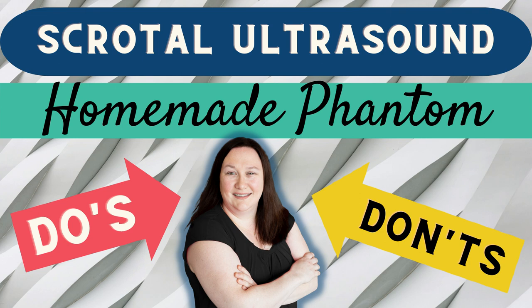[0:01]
Let's ultrasound! On today's edition of Small Parts Ultrasound, let's explore a scrotal ultrasound homemade phantom. Do's and don'ts.
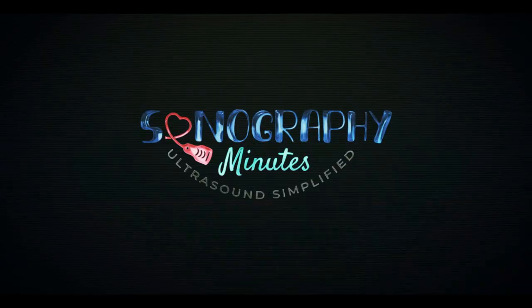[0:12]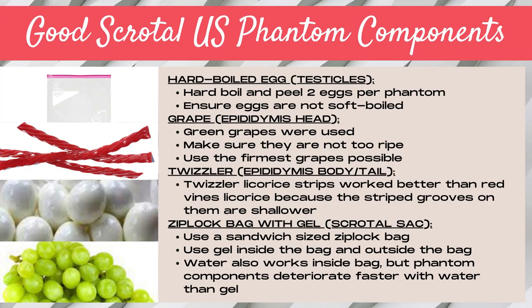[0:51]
So how did the homemade scrotal ultrasound phantom come about? We needed to find a way to simulate a scrotal ultrasound exam in the ultrasound scan lab with a group of general ultrasound students and determine which parts would work well for a homemade scrotal phantom ultrasound. We wanted to teach the scrotal ultrasound protocol tips and measurements and also be able to develop eye and hand coordination that comes with having to scan highly mobile structures such as eggs, to help simulate a real scrotal ultrasound exam. So first, let's talk about the components that worked well for a scrotal ultrasound homemade phantom.
First of all, we used hard-boiled eggs for the testicles. We hard-boiled the eggs and peeled them and used 2 eggs per phantom. And the key to this was just ensuring that the eggs were not soft-boiled because they needed to be firm to withstand firm transducer pressure.
Next, we used grapes as the epididymal heads. And we used green grapes, although you could use any color of grapes. And you wanted to make sure that they're not too ripe. You want to pick the firm grapes that are not quite as ripe. And this is also so that they hold up longer with the ultrasound gel and also firm transducer compression. We also used Twizzlers, licorice, in order to simulate the epididymis body and tail. And the grapes were used to simulate the epididymis head.
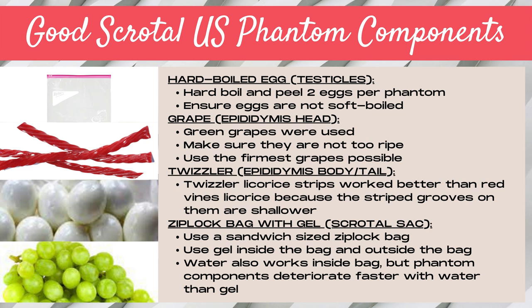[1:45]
And we found that the Twizzlers licorice strips work better than red vines because the grooves on the outside of the Twizzlers were smaller and therefore easier to image. And we also used a Ziploc bag with gel in it. And this was to simulate the scrotal sac. So we used sandwich size Ziploc bags. And we put quite a bit of gel within the bag, as well as putting gel on the outside of the Ziploc bag. Now note that you can also use water. You can put a small amount of water within the Ziploc bag. However, the ultrasound phantom components deteriorated much faster when using water.
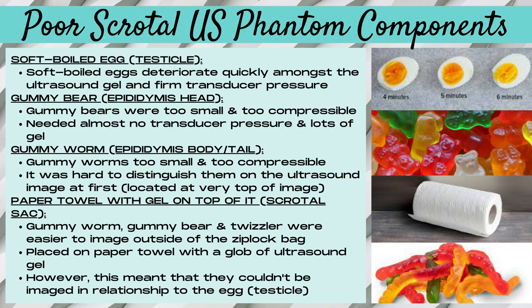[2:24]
Now let's talk about what made poor scrotal ultrasound phantom components. So first of all, when performing this lab, the most essential step is ensuring that your eggs are fully hard boiled. We had a couple of eggs from the bottom of the pan that ended up being only soft boiled. And those quickly deteriorated and did not make a good scrotal phantom ultrasound component. And they pretty much disintegrated as soon as firm transducer pressure was applied.
We also tried to use gummy bears to simulate the epididymis head. And the gummy bears were really too small and too compressible. In order to image them, we needed almost zero transducer pressure and a ton of gel. And it was exceedingly hard to see the gummy bear on the ultrasound image. And due to the challenge of visualizing this structure, there was no way to get it in the same image as the hard-boiled egg or the testicle.
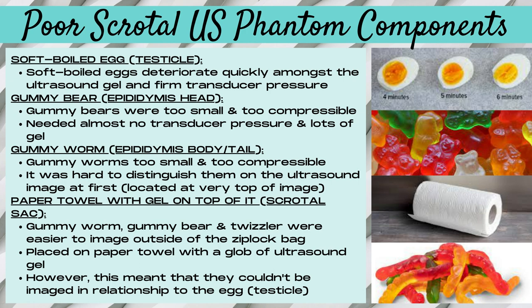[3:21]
And we also tried to use gummy worms for the epididymis body and tail. And similar to gummy bears, these were too small and too compressible. And it was incredibly hard to distinguish them on the ultrasound image. They were located at the very top of the image, but it took a lot of trial and error to determine that. And then we also tried using just a paper towel with gel on the top of it for the scrotal sac instead of a Ziploc bag.
And this did work better when imaging the gummy bears and the gummy worms and also the Twizzler. And so we placed those on a paper towel, laid them flat, and then put gel on top of them and were able to image them easier than we could image them within the Ziploc bag. However, this did mean that they couldn't be imaged in relationship to the egg or the testicle, which is what you would want to do in real life. You want to see the epididymis in relation to the testicle for comparison purposes.
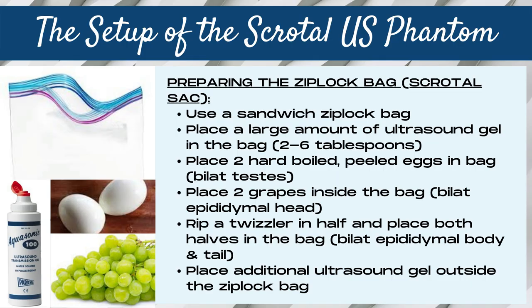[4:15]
To prepare the scrotal ultrasound phantom, we used a sandwich Ziploc bag and we placed a large amount of ultrasound gel within the bag. And this was most commonly between 2 and 6 tablespoons of gel. And then we placed 2 hard-boiled peeled eggs in the bag to simulate the bilateral testicles. And then placed 2 grapes inside the bag to simulate the bilateral epididymal heads. And then we broke a Twizzler licorice stick in half.
half and placed both halves in the bag to simulate the bilateral epididymal body and tail. And then we placed additional ultrasound gel outside the Ziploc bag. And this worked fairly well. However, the components started to break down rather quickly.
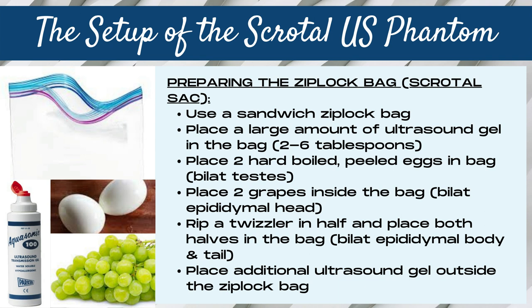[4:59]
So rather than putting everything in the bag at the same time at the start of the lab, I suggest only put the right-sided structures in first and then do all your images and then put your left-sided structures in second, meaning the grape and the Twizzler. Both testicles or eggs should go into the bag right away. But the grapes and the Twizzlers broke down fairly quickly. So if you can hold off on the left epididymal head and the left epididymal body and tail and put those in the bag right when you're needing to image them, they won't have deteriorated while you're scanning the right-sided
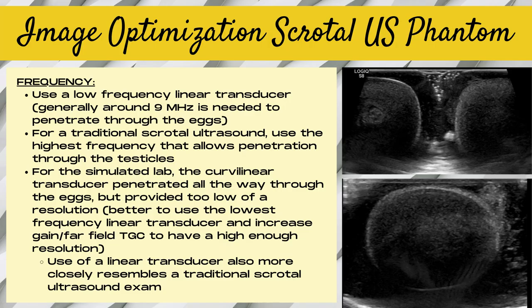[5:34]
structures. Let's talk a little bit about image optimization for this scrotal ultrasound phantom. First of all, the hard-boiled eggs were very dense, and so we needed to use the lowest frequency linear transducer, and we are generally around the 9 megahertz range in order to try to penetrate through the eggs. And we truly actually needed to go lower than that, but our linear transducers didn't have capability to go lower without switching to a curvilinear transducer. And when we did switch to a curvilinear transducer, the resolution was much too low. So had we been able to, we really needed to probably be around 5 to 7 megahertz frequency level for the ideal frequency level for the scrotal phantom.
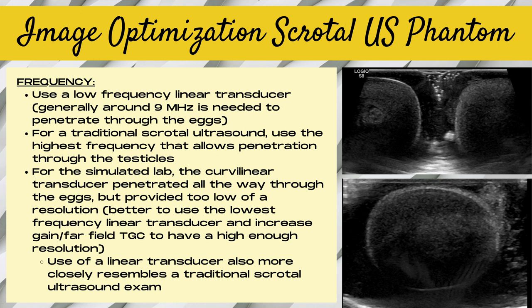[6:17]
When you're imaging a traditional scrotal ultrasound, you always want to use the highest frequency that allows you to penetrate down through the testicles. And so you may be able to use a much higher frequency than the scrotal ultrasound phantom allowed. We also stuck with a linear transducer for this scrotal ultrasound phantom exercise to more closely resemble a traditional scrotal ultrasound exam, in which linear transducers are used most of the time to perform the exam.
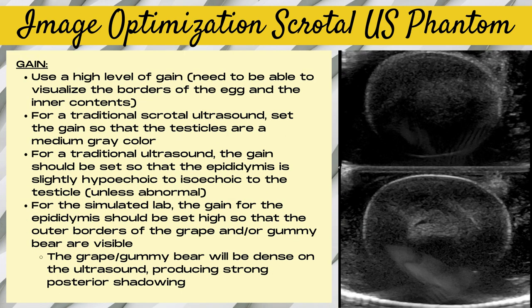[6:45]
Next, let's talk about gain. We had to use a really high level of gain due to the lack of penetration. And so we had to really crank the gain up in order to be able to visualize the borders of the egg all the way around. Now for a traditional scrotal ultrasound, you want to set the gain so that the testicles are a medium gray color. And the gain should be set so that the epididymis is slightly hypoechoic to isoechoic compared to the testicles, as long as they're normal.
For this simulated lab, the gain has got to be set up high enough so that you can clearly see the outer borders of the scrotal ultrasound components, whether that be the grape, the gummy bear, the egg, the Twizzler, or the gummy worm. And note that many of these components, such as the grape and the gummy bear, are going to be very dense structures, and they're going to produce strong posterior shadowing.
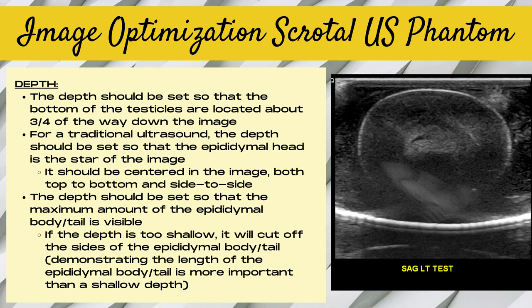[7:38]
Time to talk about depth. The depth should be set so that the bottom of the testicles or the eggs are located about 3/4 of the way down the image. And for a traditional ultrasound when imaging the epididymis, the depth should be set so that the epididymal head is the star of the image and is centered in the image, both top to bottom and also side to side.
For the simulated lab, the depth should be set so that the maximum amount of the epididymal body tail is visible. And note that if the depth is too shallow, it's going to cut off the sides of the epididymis body and tail. And demonstrating the length of the epididymal body tail is more important than a shallower depth and having the epididymal body and tail more zoomed up on the image.
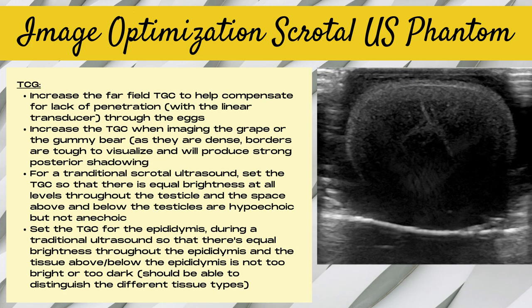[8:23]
Due to the lack of our ability to penetrate through the dense eggs for this lab, we really needed to increase the far-field TGC to help compensate. And we also needed to increase the TGC when imaging the grape or the gummy bear, as they were very dense structures. And the borders are very tough to visualize and they have strong posterior acoustic shadowing.
For a traditional scrotal ultrasound, you want to set the TGC so that there's equal brightness at all levels throughout the testicle, and that the space above and below the testicles are hypoechoic but not anechoic on the image. And then for the epididymis, you want to set the TGC so that there's equal brightness throughout that epididymis, and that the tissue above and below the epididymis is not too bright or too dark. You should be able to distinguish the different tissue types above and below the epididymis and also the testicles.
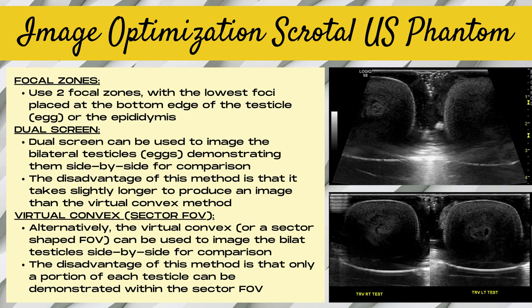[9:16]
When imaging the scrotal phantom, as with a traditional scrotal ultrasound, you generally want to use 2 focal zones with the lowest foci placed at the bottom edge of the testicle or the epididymis. And then you can either use dual screen to image the bilateral testicles side by side for comparison. A disadvantage to this method is that it takes just slightly longer to produce an image than the virtual convex method. Or you can also use virtual convex to display the testicles side by side for a comparison image.
And virtual convex is a sector-shaped field of view. Even though you're using a linear transducer with a rectangular field of view, there's a control on the ultrasound machine, called virtual convex, specifically on GE machines, that allows you to change the image shape to a sector shape and get more of the testicles within the image. Now, a disadvantage of using virtual convex is that only a portion of each testicle can be demonstrated within the sector field of view image, while when using dual screen, you can show both entire testicles.
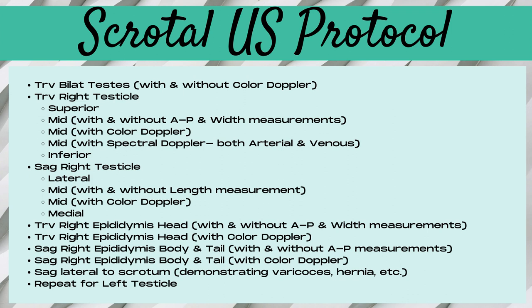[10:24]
Time to talk about a typical scrotal ultrasound protocol. So you first want to take a comparison image, a transverse of the bilateral testicles with and without color Doppler. And you're looking to see, are the testicles the same size? Are they the same echogenicity? And do they have the same amount of blood flow bilaterally?
And then you want to move to a transverse right testicle and you want to image this superior, mid, and inferior. And for the mid portion, you want to take width and AP measurements. And then for the mid image, you also want to perform color and spectral Doppler images. And it's crucial that when you're doing the spectral Doppler images that you are not only interrogating the arteries, but also a vein. And then you want to move on to a sagittal right testicle. And you want to image this laterally, a mid shot, and also medially. And for the middle portion, you want to take a length measurement and also a color Doppler image.
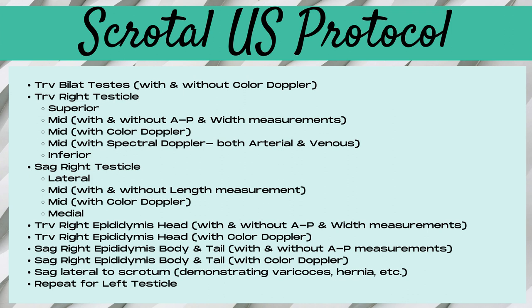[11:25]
And then it's time to move on to the epididymis. And you want to start with a transverse right epididymal head with and without width measurements and also with color Doppler. And it's crucial to compare the color Doppler signal of the epididymis with the testicle. So make your color box wide for this image so that you can compare the color flow signal between those two structures. And next, you want to turn into a long or sagittal plane to demonstrate the epididymal body and tail.
And you want to take AP measurements of the epididymis body and also the epididymis tail. So that's going to be four measurements altogether for the epididymis. And then you also want to demonstrate the color Doppler of the epididymis body and tail and compare that with the blood flow pattern within the testicle. Next, move on to a sagittal lateral picture. And this is going to be the space that's lateral to the scrotum. And this is where you would demonstrate if there's any hernias, varicoceles, etc. And then you want to repeat all of that for the left testicle.
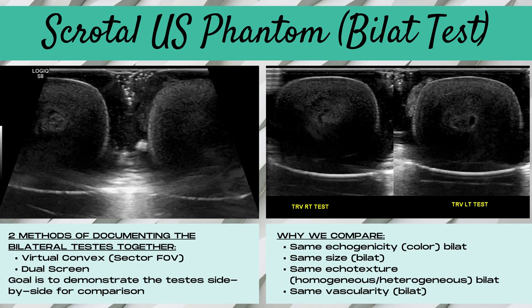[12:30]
Here are some images of our scrotal ultrasound phantom demonstrating the bilateral testicles, and these are our hard-boiled eggs. The image on the left shows the virtual convex. This is a sector field of view method of demonstrating the bilateral testicles. And the goal is that you want to demonstrate the testes side by side for comparison. And you can see with this technique, only a portion of each testicle is visible. On the right side of the screen, we use the dual screen control to demonstrate the bilateral testes. And for this, you can notice that both testes are visible in their entirety.
Now, why do we compare? We compare to determine if the testicles are the same echogenicity bilaterally. Are they the same size bilaterally? Do they have the same echo texture? Meaning, are they homogeneous or heterogeneous in echo texture? And then also, do they have the same amount of vascularity bilaterally?
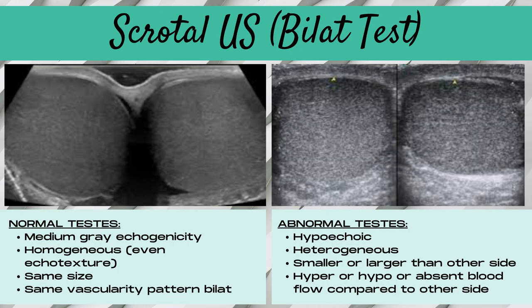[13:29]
Now here's what a normal scrotal ultrasound would look like. The image on the top left demonstrates the virtual convex method of demonstrating both testicles side by side within that sector-shaped field of view. And the upper right-hand image demonstrates the bilateral testicular comparison using the dual screen control. Normal testicles on ultrasound are going to be a medium gray echogenicity, and they're going to have a homogeneous, even echo texture. They should be relatively the same size and should have the same vascularity pattern bilaterally. Abnormal testicles are going to be hypoechoic, heterogeneous, smaller or larger than the other side, with hyper or hypo or avascular blood flow compared to the other testicle.
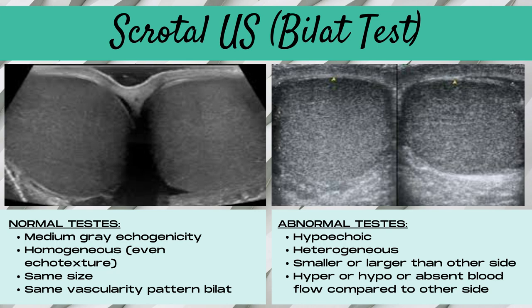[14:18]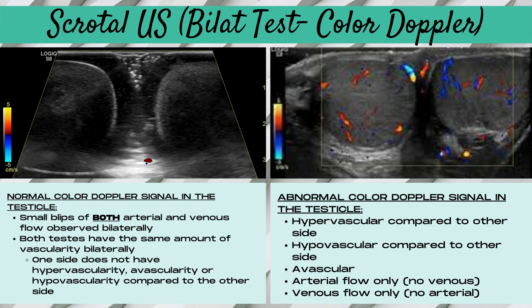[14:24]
And they may also have free fluid around them and or display signs of skin thickening. Now let's talk about color Doppler and imaging the bilateral testicles. It's crucial to take a color Doppler image of both testicles side by side so that you can compare the vascularity pattern from one testicle to the other.
The upper left-hand image is a simulated color Doppler image using the scrotal phantoms. And we had our students practice this so that they could get in the habit of always evaluating the bilateral testicles with color Doppler, even though eggs, when used as testicles, are obviously not going to have a color Doppler signal pattern within them. So what is a normal color Doppler signal in the testicle?
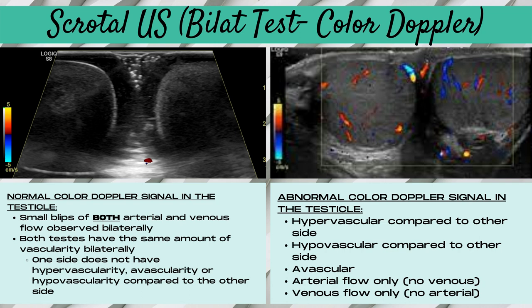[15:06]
You want to see small blips of color Doppler signal that demonstrates both arterial and venous flow bilaterally in the testicles. And you want both testicles to have the same amount of vascularity bilaterally. And you want to make sure that one side is not hypervascular, avascular, or hypovascular compared to the other side.
An abnormal color Doppler signal in the testicle is going to be hypervascular compared to the other side. It could also be hypovascular compared to the other side. It could be avascular compared to the other side. Or it may demonstrate arterial flow only with no venous signal, or venous flow only with no arterial signal.
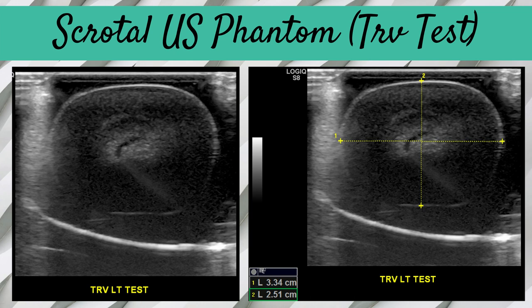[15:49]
Next up, we're moving on to the transverse testicle. And these images both demonstrate the scrotal ultrasound phantom. So these are our hard-boiled eggs. And what I really liked about this scan lab that I think is really important for demonstrating real-world conditions is that the bilateral eggs were highly mobile within that gel-filled Ziploc bag. And so you really have to get the hang of using firm transducer pressure to get that egg to sit still enough that you can image it.
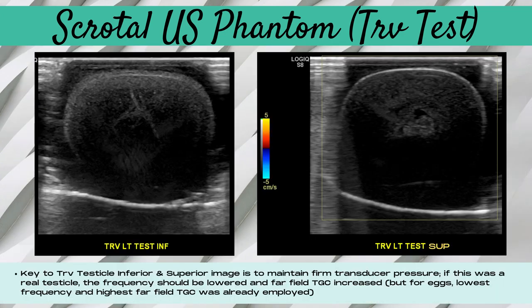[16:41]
And so this is an image demonstrating the transverse testicle and then also the measurements that should be taken for the transverse testicle, which are an AP measurement. This is the vertical measurement on the image, and a width image. And this is the horizontal image on the screen. And then it's crucial to demonstrate the transverse testicle both inferiorly and superiorly to show that there's no pathology within that testicle.
And the key to getting these images is to maintain firm transducer pressure while slightly angling the probe either superiorly or inferiorly. Now, in a live patient, you have to be really careful that you're not hurting the patient while you're maintaining that firm transducer pressure. And most of the time, you just want to ensure that your frequency is low enough to penetrate through the testicle, and that also your far-field TGC is increased enough within the testicle to be able to see that inferior border. However, when using eggs for this lab, the lowest frequency and the highest far-field TGC were already being employed, which is why it's difficult to visualize the bottom borders of this simulated testicle.
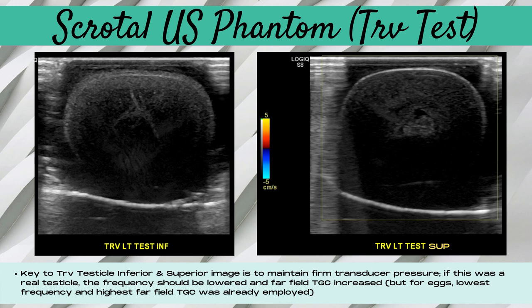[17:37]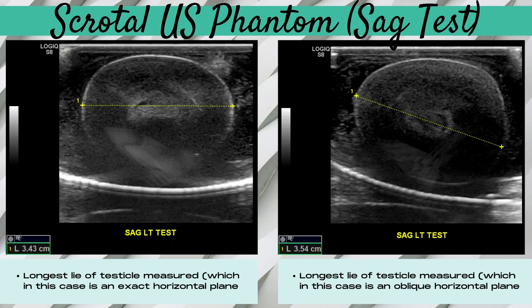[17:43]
And it's also crucial to demonstrate color Doppler when imaging the transverse testicle. Time to move on to the sagittal testicle. And both of these images are using our scrotal phantom hard-boiled eggs for our images. And there's two methods of imaging the sagittal or long testicle. The key is that the testicle is going to be a highly mobile structure. So you want to ensure that you're measuring what we call the longest lie of the testicle, or the longest length that you can get.
In the upper left-hand image, the longest length of the testicle happens to be exactly horizontal on the image, while in the upper right-hand image, the longest lie of the testicle is a more oblique measurement. Either way, these are both correct measurements as long as the longest dimension or length of that testicle is being measured, and it's all dependent on how that testicle is lying within the body.
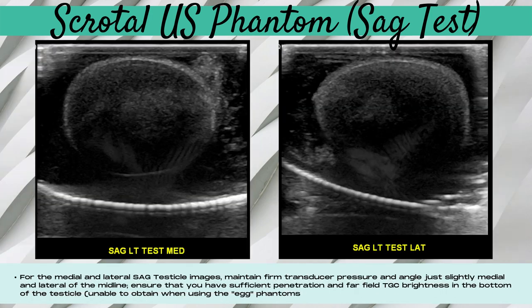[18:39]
The medial and lateral slices of the sagittal testicle should also be imaged. And you do this by applying firm transducer pressure to the midline of the testicle and then slightly angling your probe either medially or laterally. And when you're doing this sweep in real time, you just want to ensure that you've looked through all of that testicle and there's nothing hiding along the edges of the testicle borders. And it's crucial that you be able to see all the way to the bottom of the testicle.
You'll notice on these simulated egg testicles that the far field TGC is too dark and there's a lack of penetration. Now, we were using the maximum amount of TGC in the far field and also the lowest frequency that was possible with our linear transducer, so that we had no other way to improve this image rather than dropping down to a curvilinear transducer, which ended up being too grainy of an image for our purposes.
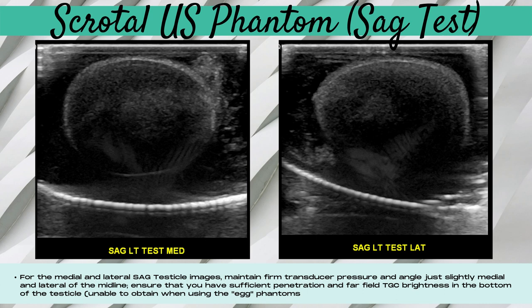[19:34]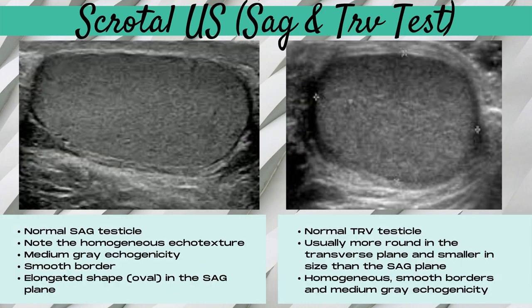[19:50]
However, when you're scanning a traditional scrotum exam, you want to ensure that you have enough penetration and also your far field TGC is bright enough that you can see the bottom margins of that testicle so that you can accurately evaluate it for pathology. Now, here's what a true sagittal and transverse testicle look like on an ultrasound.
The normal sagittal testicle is going to be homogeneous in echotexture. It's going to have a medium gray echogenicity. It's going to be the longest length of the testicle with a smooth border and elongated shape. These are going to be oval shaped in this long or sagittal plane. And note that this is long or sagittal to the testicle itself and not the body, because testicles are highly mobile, they can really lie in different positions within the scrotal sac.
And then the normal transverse testicle is usually going to be more round in shape and also smaller than the sagittal plane. It's also going to be homogeneous in echotexture and have smooth borders with a medium gray echogenicity.
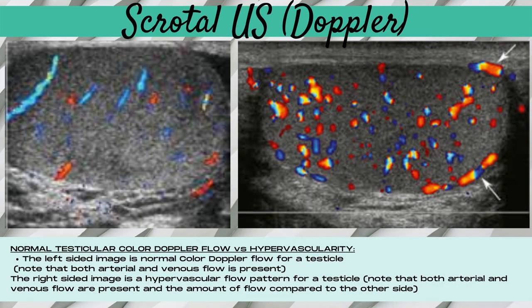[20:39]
Now let's look at normal versus abnormal color Doppler flow for a scrotal exam. The upper left-sided image is a normal color Doppler flow for a testicle, and you can see that it's demonstrating both arterial and venous flow. This is crucial for a normal testicle. The upper right-handed image is demonstrating hypervascularity within the testicle on color Doppler. And note that there's also arterial and venous flow present, which is normal. However, the amount of flow compared to the other side is significantly increased. And this most commonly occurs when infection or inflammation of the testicle is present.
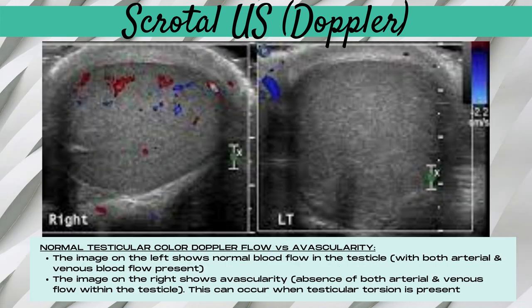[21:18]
Now let's look at another representation of color Doppler flow for a scrotal ultrasound. The image on the upper left shows normal blood flow in the testicle with both arterial and venous flow present. And then the image on the upper right shows avascularity within the testicle. This is absence of both the arterial and the venous flow within the testicle. And this can occur when testicular torsion or twisting of the testicle is present.
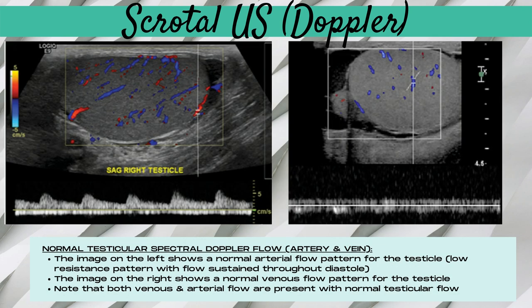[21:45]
Time to look at spectral Doppler of the testicle. These two images demonstrate normal testicular spectral Doppler flow patterns for both arterial and venous flow. The image on the upper left shows a normal arterial flow pattern for the testicle, and this is going to be a low resistance pattern with flow sustained throughout diastole. And then the image on the right is demonstrating a normal venous flow pattern for the testicle. And note that it is crucial that both venous and arterial flow are present within normal testicular flow. And you should demonstrate both of these with spectral Doppler for every scrotal ultrasound exam that you perform.
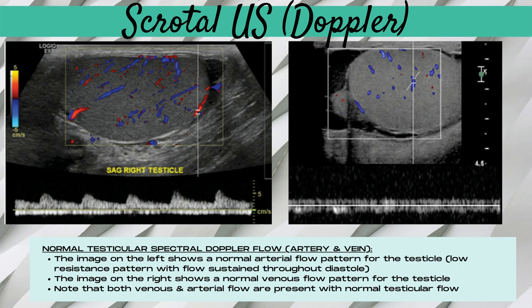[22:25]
And this is because when torsion is present of the testicle, this is a twisting of that testicle, blood flow is cut off and it can be intermittently cut off. Or when torsion is just beginning, sometimes only the venous flow is cut off and you can still have arterial flow present. And when venous flow is absent, this is one of the first signs that torsion may be present.
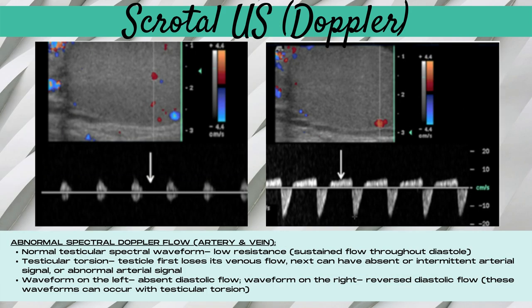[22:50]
Let's look at what an abnormal spectral Doppler waveform would look like for a scrotal ultrasound. A normal testicular spectral Doppler waveform is going to be low resistance, which means it's going to have sustained flow throughout diastole. With testicular torsion, the testicle is first going to lose its venous flow, and next, it's going to have absent or intermittent arterial flow and or an abnormal arterial Doppler waveform. The waveform on the left is absent diastolic flow, and the waveform on the right is reverse diastolic flow. And these waveforms can occur with testicular torsion.
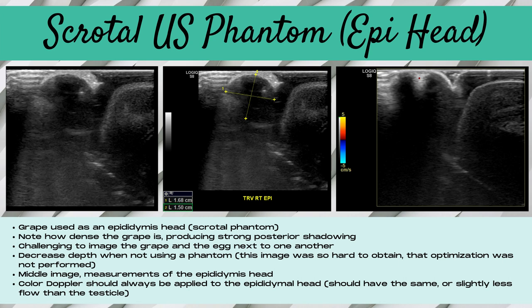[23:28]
For this next slide, we used a grape as a phantom for the epididymis head. And note how dense the grape is, and it produces strong posterior shadowing. And it was really challenging to image the grape and the egg, which represents the testicle, next to one another. For a normal scrotal ultrasound, you're gonna wanna decrease the depth in order to make the epididymal head the star of the image. And you should center that epididymal head within the image from top to bottom and side to side in the image.
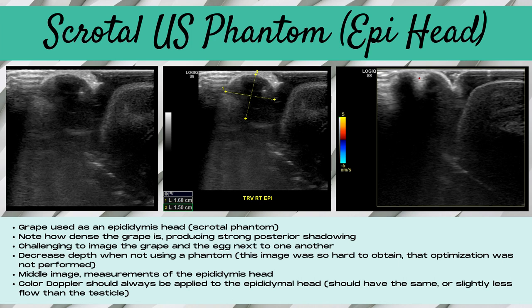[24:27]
And you want to use a wide color box because it's essential to compare how much flow is in the epididymis to how much flow is in the testicle. And for a normal epididymal head, it should have the same amount of flow as a testicle or slightly less flow than the testicle. What you don't want to see is absent flow, which is avascularity, or hypervascularity.
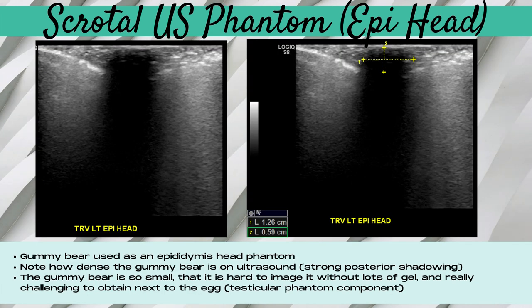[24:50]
We also tried to use a gummy bear to represent the epididymal head on an ultrasound. Note how dense this gummy bear is on the ultrasound. It displays strong posterior shadowing. Unfortunately, the gummy bear is so small and so compressible, it was really hard to image it, and we had to use a lot of ultrasound gel.
And we were unable, due to its small size and compressibility, to image this structure in comparison with the testicle, which is the normal image that you're going to want to take when imaging the scrotum. You want to have a comparison shot between the epididymal head and the testicle side by side to each other.
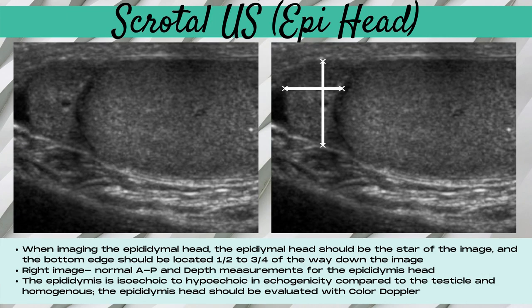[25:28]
These images show what a normal epididymal head will look like on an ultrasound. And the proper way to image this is opposite of what they've done in these images. You want to slide the epididymal head over so it's about a quarter of the way across the image so that there is empty space on the side of it. And then you should show just a portion of the testicle for comparison next to it. But you really want to make that epididymal head the star of your image. And in this image, it's crammed so far into the side of the image that it's truly not the star.
And you want to adjust your depth so that you've centered that epididymal head side to side and top to bottom on the image. Plus, you also want to show a portion of the testicle so that the echogenicity of the testicle and the echogenicity of the epididymal head can be compared to each other, as well as the echotexture. The image on the right demonstrates the normal measurements that you would want to take of the epididymal head. And this is a length measurement, which is horizontal, and an AP measurement, which is vertical.
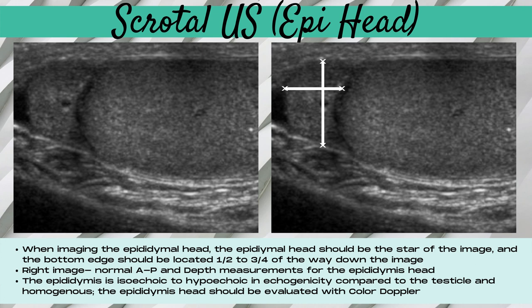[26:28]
On the ultrasound image. In a normal ultrasound, the epididymis is going to be isoechoic to hypoechoic in echogenicity compared to the testicle, and it's going to be homogeneous in echotexture just like the testicle is. Another crucial step is that the epididymal head should always be evaluated with color Doppler, and the color box should be big enough that both the testicle and the epididymal head color Doppler signal can be compared to one another on the ultrasound at the same time.
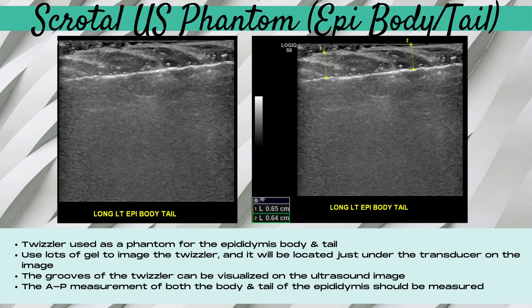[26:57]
Next up, we're moving back to our scrotal phantom. And for this section, we used a Twizzler licorice stick. And we did this to simulate the epididymis, body, and tail in the long plane. And this works better than a normal Red Vines licorice stick because it's got less pronounced grooves in it. And you can actually see on this ultrasound image the actual grooves of the Twizzler stick around the Twizzler rope, which I thought was pretty fascinating.
The best way to get this image is to take the Twizzler out of the scrotal sac, which is the Ziploc bag, and place it on a paper towel, and then place a large glob of gel on top of the Twizzler. And then with very light transducer pressure, keeping that gel between the transducer and the Twizzler, you will get this image, and you'll see that Twizzler on the top portion of the image.
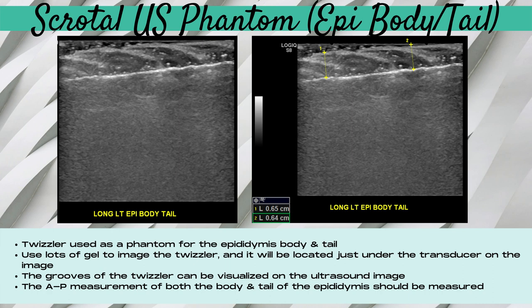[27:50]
Now, I could have zoomed this up and made this Twizzler even more the star of the image. However, if I had done that, I wouldn't have seen as much of the length of the Twizzler. And the length of that Twizzler, which in real life would be the epididymis, body, and tail, is crucial to see as much of it as you can. You don't want to zoom it up too much because you'll end up cutting off the sides of that Twizzler and showing less of its length. To measure this, you want to measure the AP dimension of both the body and the tail. And those measurements are demonstrated on the top right image.
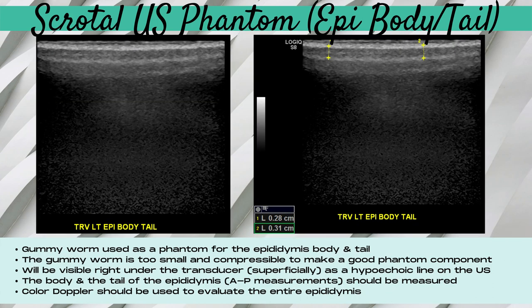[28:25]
For the next scrotal ultrasound phantom component, we used a gummy worm to simulate the epididymis, body, and tail. And you'll note how challenging it is to see this on the ultrasound. And we really learned that the gummy worm is too small and too compressible to be used as a good phantom component.
In order to see this, we had to take the gummy worm out of the scrotal sac, which was the Ziploc bag with gel, and place it on a paper towel and place a huge amount of gel on top of it, and then barely touch the transducer down until we could just get an image. And the gummy worm will be very superficial on the image. And then we went ahead and measured the body of the epididymis and the tail of the epididymis.
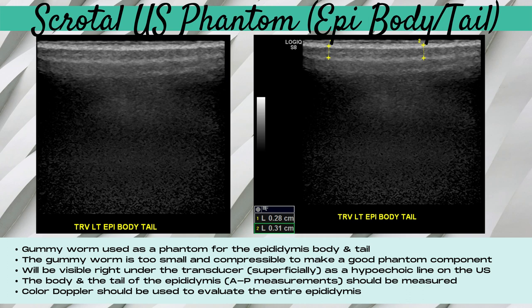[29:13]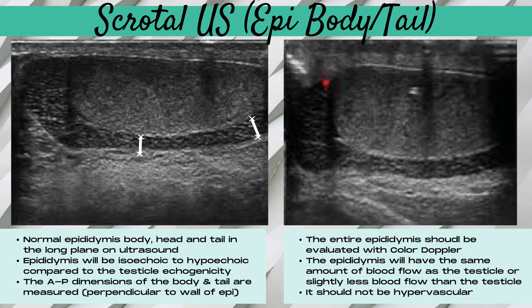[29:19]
And it's also crucial that you use color Doppler to evaluate the entire epididymis. And now moving on to an image of a real epididymis body and tail. This is the epididymis in the long plane. And note that this is long or sagittal to the epididymis itself, not necessarily to the body. And the normal epididymis body, head, and tail can all be seen together in that long plane.
And the epididymis is going to be isoechoic to hypoechoic compared to the testicle, and it's going to be homogeneous in echogenicity. And the AP dimensions of the body and the tail should be measured, and this should be measured perpendicular to the wall of the epididymis, so perpendicular to its lie. It's also crucial that you evaluate the entire epididymis with color Doppler, and that you also do this in the transverse plane when you're imaging the transverse epididymis head.
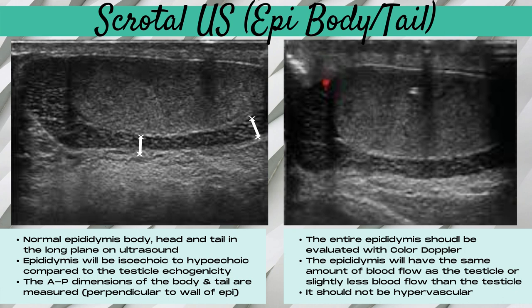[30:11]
The epididymis should have the same amount of blood flow as the testicle or slightly less blood flow than the testicle. It should not, however, be avascular or hypervascular. And ensure that your color box is large enough that it demonstrates the entire epididymal length all the way from the head to the tail, and that that is shown in comparison to the blood flow pattern of the testicle.
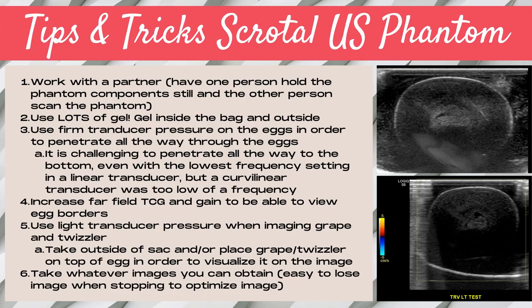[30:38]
Let's talk about some tips and tricks that are helpful when performing an ultrasound of a scrotal ultrasound phantom. Number one, work with a partner. It helps so much to have one person hold the phantom components still and the other scan the phantom. Now, in real life, you can't do this when performing a scrotal ultrasound, but when you're a student and first learning, you don't often have that hand coordination to be able to perform this lab on your own. Now, if you're experienced in sonography and have built up that hand coordination, it's much easier to perform this lab one-on-one without extra help.
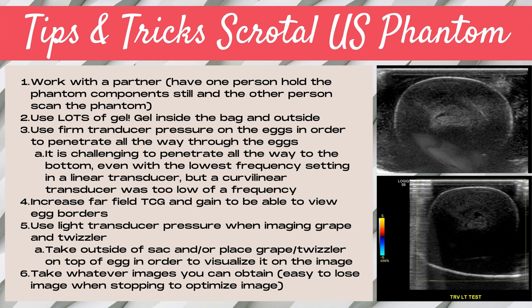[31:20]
Also, tip number two is you want to use lots of gel. Do not skimp on the ultrasound gel. You want gel inside the Ziploc bag and also outside the Ziploc bag. And then moving on to tip three, you want to ensure that you're using firm transducer pressure on the eggs in order to penetrate all the way through the eggs.
And it's really challenging to penetrate all the way to the bottom, even with the lowest frequency linear transducer setting. But when we tried the curvilinear transducer, it was too low of a frequency and did not provide high enough resolution. It's crucial to keep in mind that when you're performing a normal scrotal ultrasound, you'll need transducer pressure that's firm enough in order to get diagnostic images, but not so firm that it's hurting the patient. Tip number four is to increase the far-field TGC and the gain to be able to see the egg borders as much as you can, in spite of there not being enough penetration with the frequency.
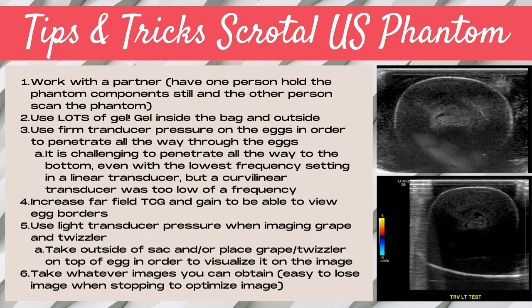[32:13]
And then tip number five, you want to use very light transducer pressure when you're imaging the grape and the Twizzler. These are the scrotal phantom ultrasound components to simulate the epididymal head, body, and tail. And my best advice is to take them outside of the Ziploc sac, which represents the scrotal sac, or if you keep them in the sac, place the grape or the Twizzler on top of the egg in order to visualize it better on the image.
And then the last tip I have for you is to not be too hard on yourself. This is a challenging lab to perform, especially when you're first learning ultrasound. So take whatever images you can obtain. It's easy to lose these images when you stop to optimize the images. So this is the only type of lab or practice in the ultrasound lab where we encourage you to just get the best image you can get and not try your very best to optimize it.
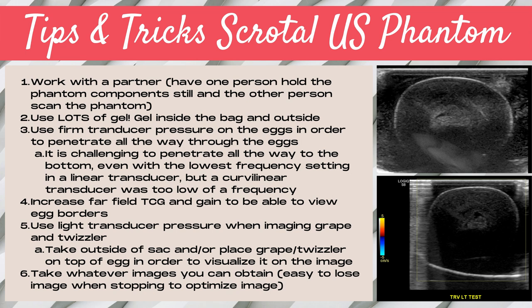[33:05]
Because sometimes you've got to be getting these images really fast and you will lose the image if you spend too much time trying to optimize it. Now note that that's the opposite advice that I give for all other labs.